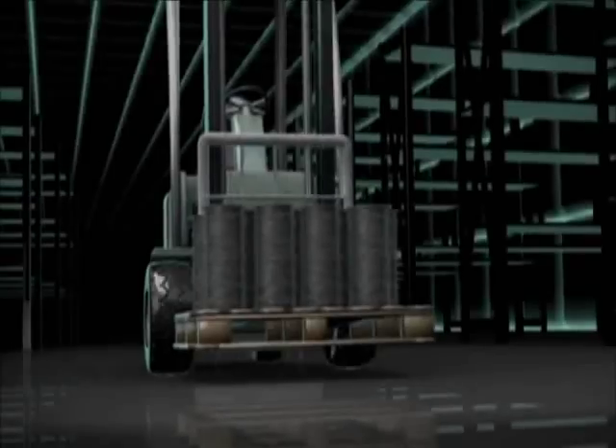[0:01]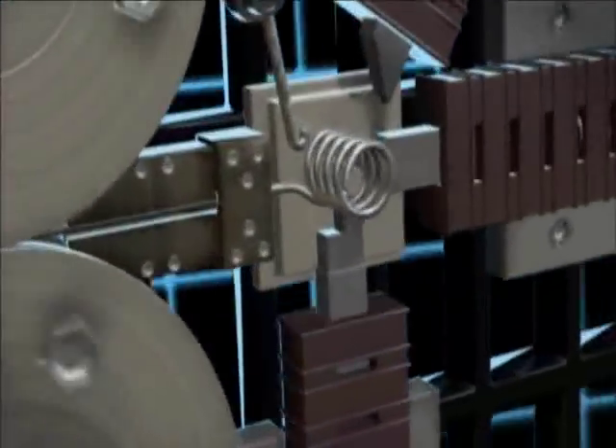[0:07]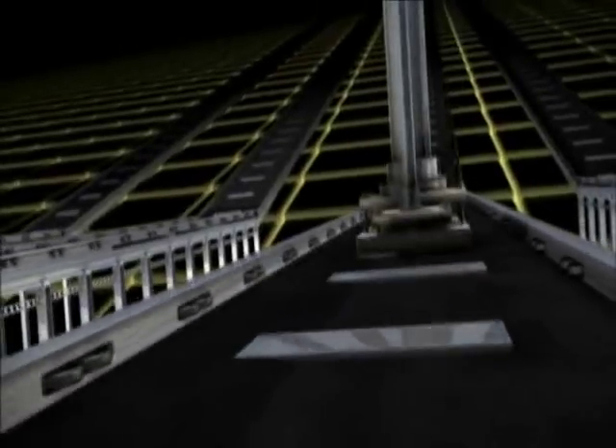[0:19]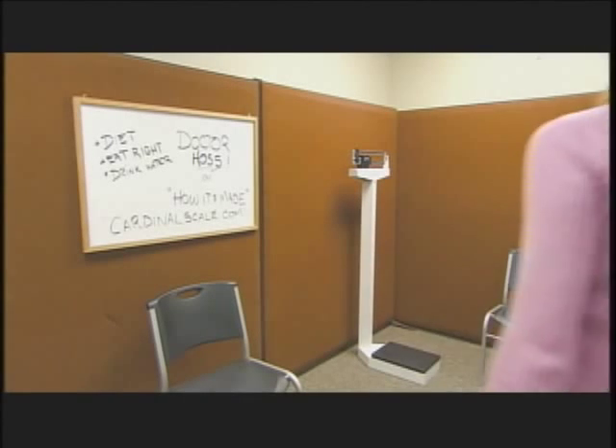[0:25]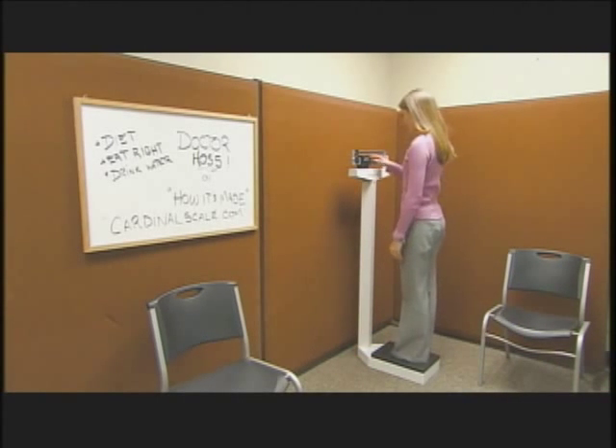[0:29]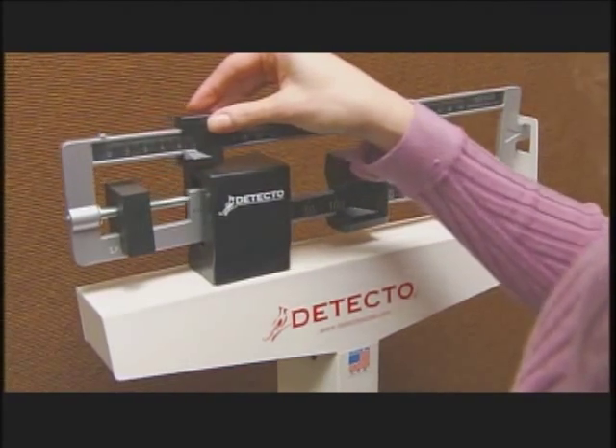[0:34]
This scale compares the weight placed on the platform with a standard weight, known as a poise, that slides along an off-center weighbeam until it balances.
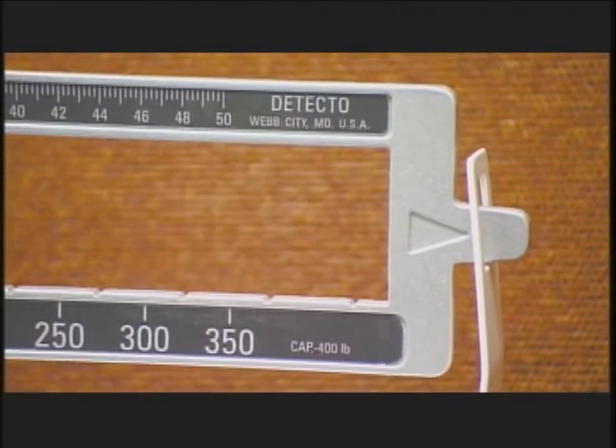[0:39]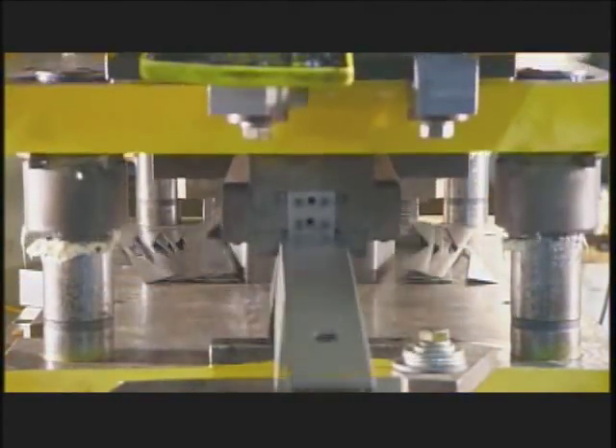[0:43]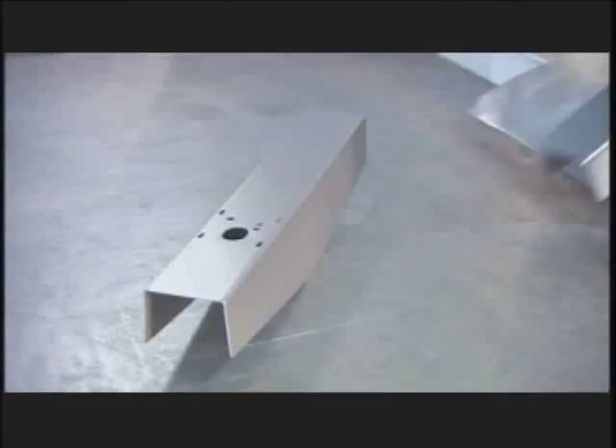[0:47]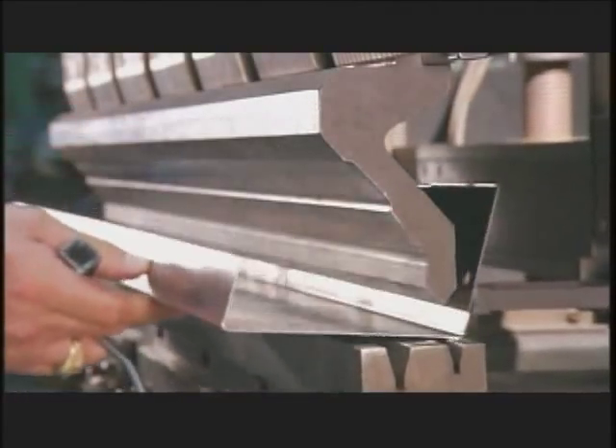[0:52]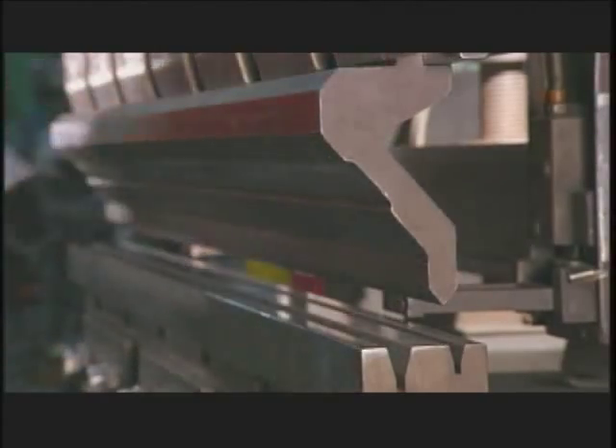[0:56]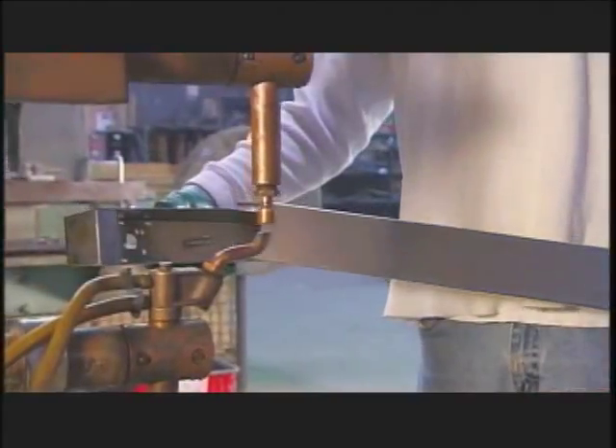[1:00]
A punch press forms sheet steel into the head or top of the scale's column. Workers form the column from another piece of steel using this press brake. Then they spot weld the head and column together.
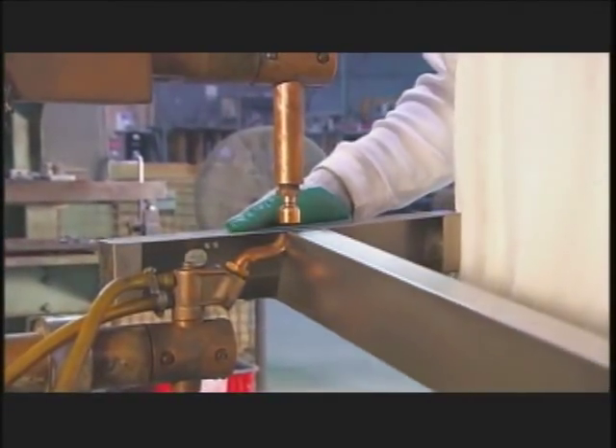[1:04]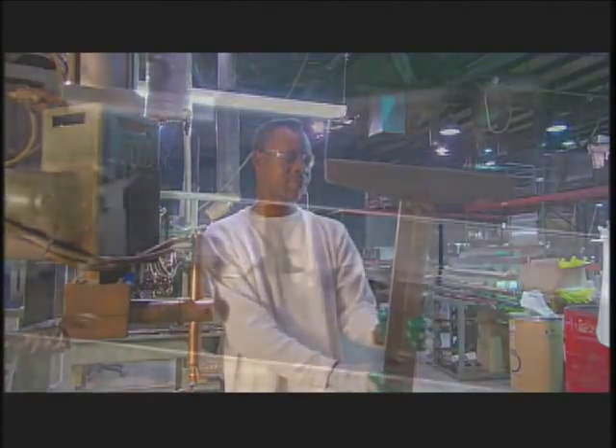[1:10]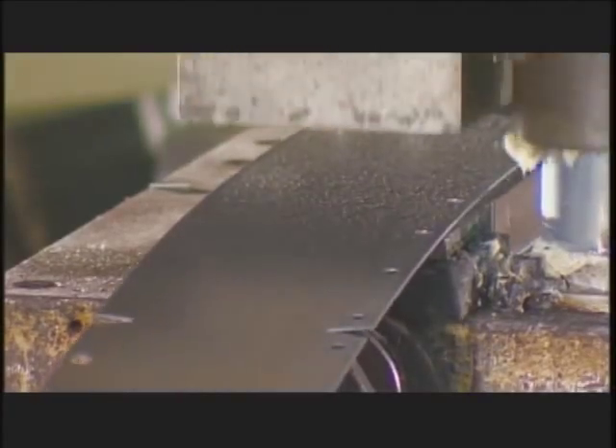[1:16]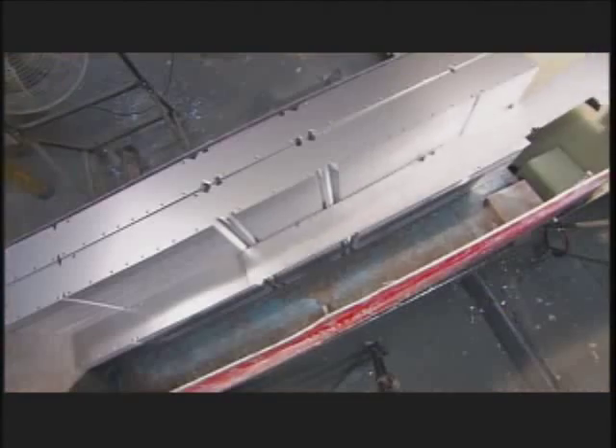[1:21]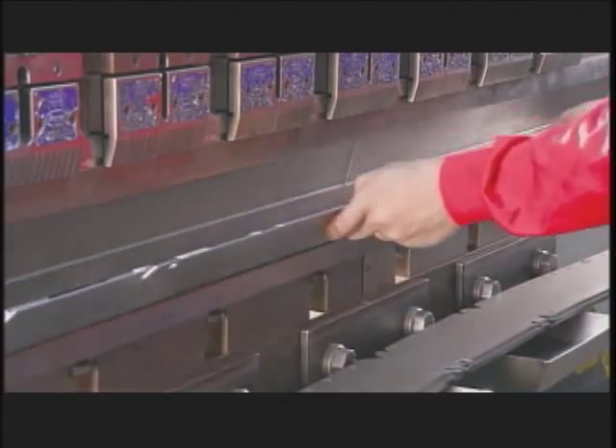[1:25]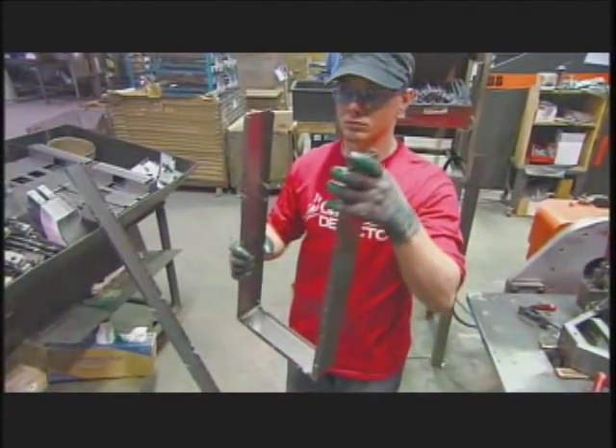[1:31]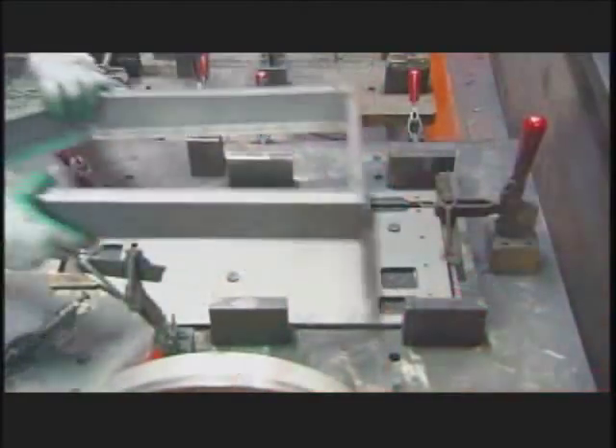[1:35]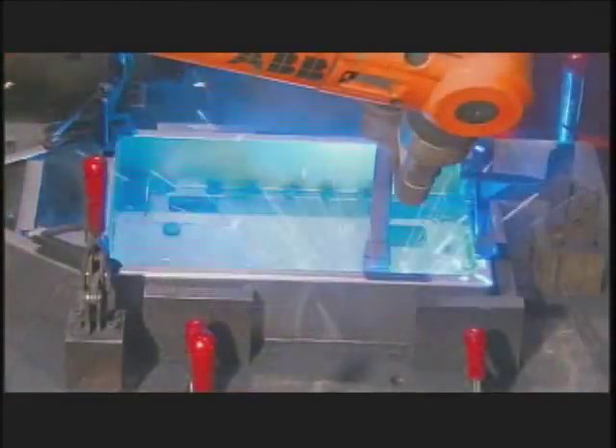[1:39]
Another machine stamps out lengths of steel that will form the frame for the scale's base. Workers use the press brake again to bend both sides of the steel lengths. Then they fold it by hand to form the frame. They clamp the frame onto a base, and this robot welds them together.
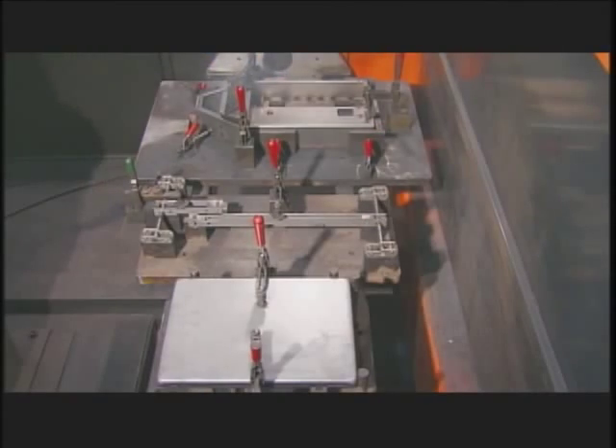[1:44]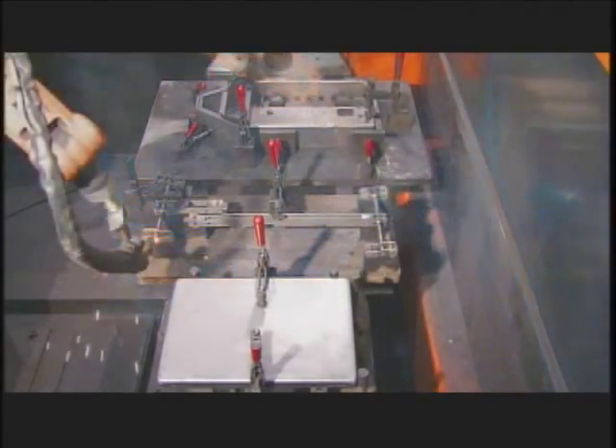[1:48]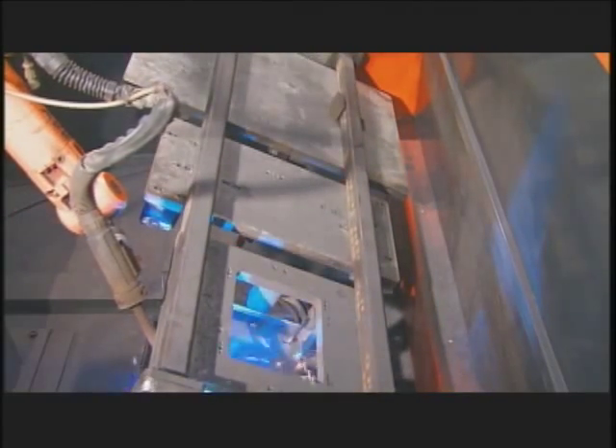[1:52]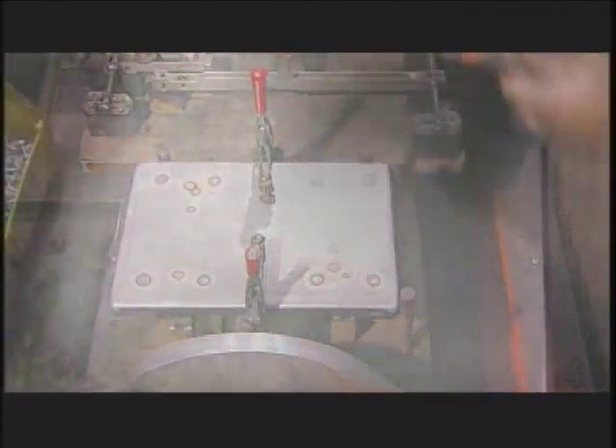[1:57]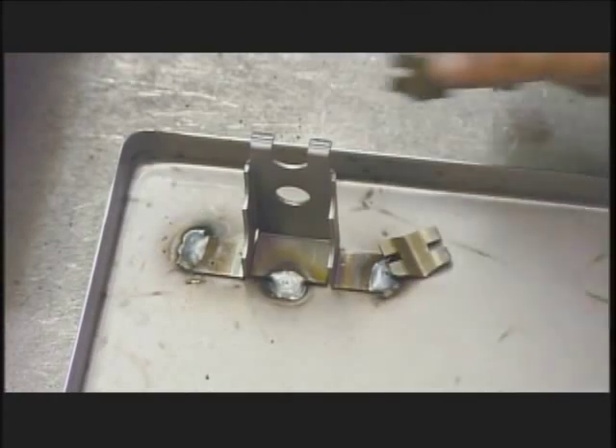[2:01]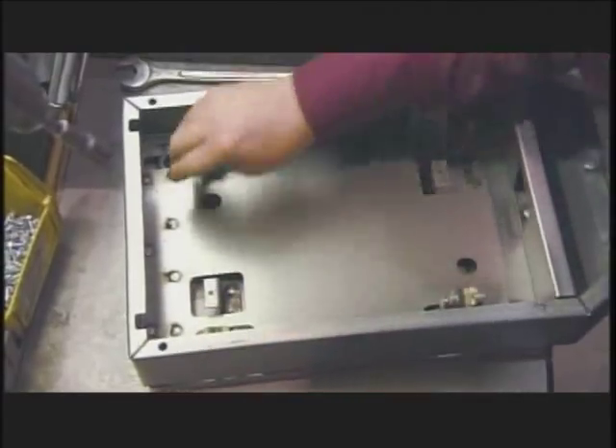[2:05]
The robot moves on to weld other components to the scale, such as the lever mechanism and the base plate. Now workers place steel bearings at each corner of the base where the lever mechanism will rest. Then add the base frame.
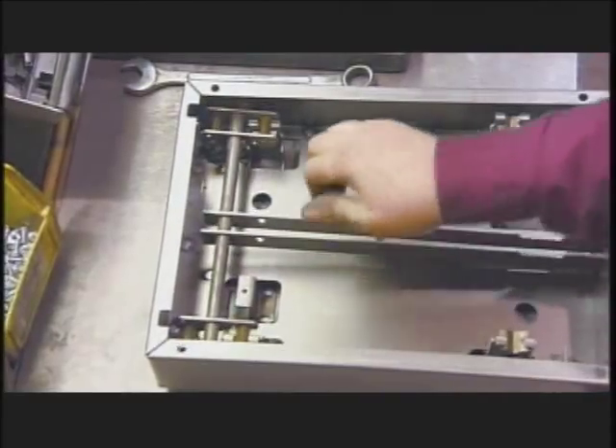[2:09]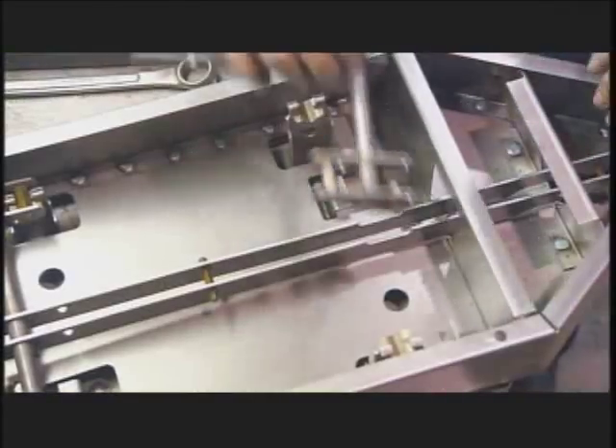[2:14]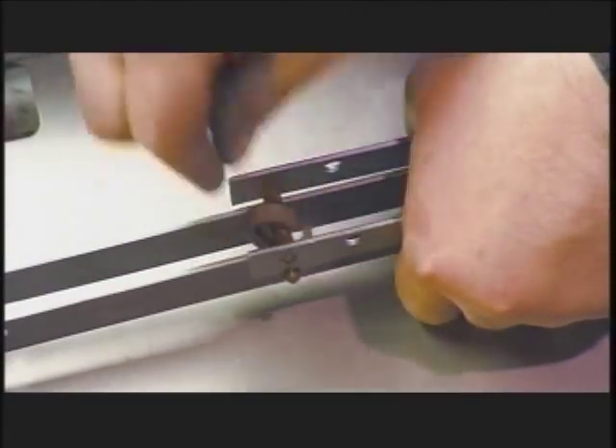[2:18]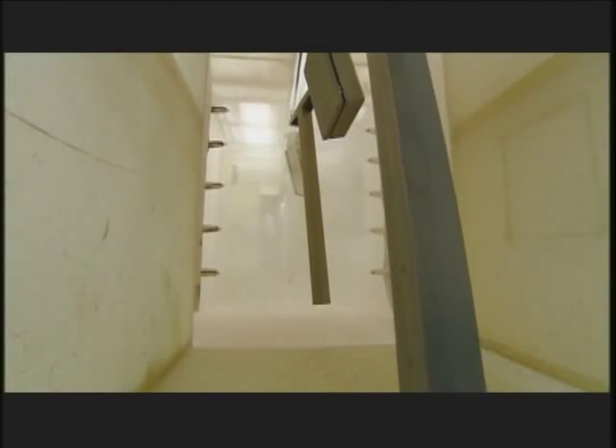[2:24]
Next, they install the long lever, then the short lever. A C-clip joins them together. Once it's right side up, the lever mechanism hangs off the platform.
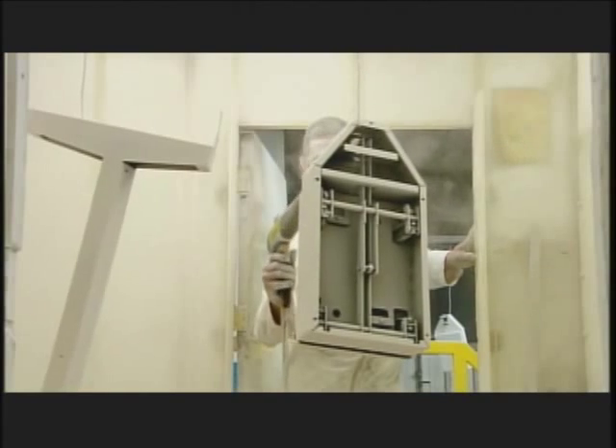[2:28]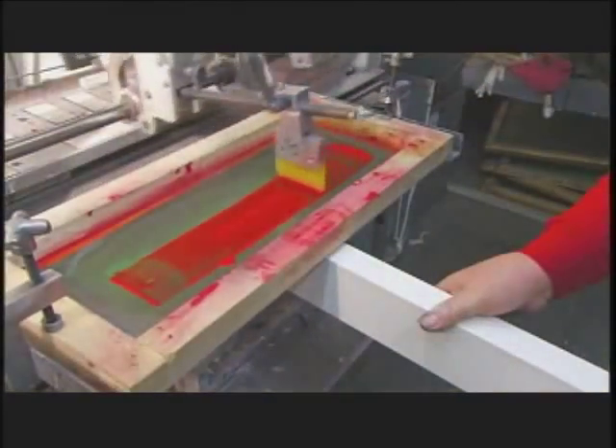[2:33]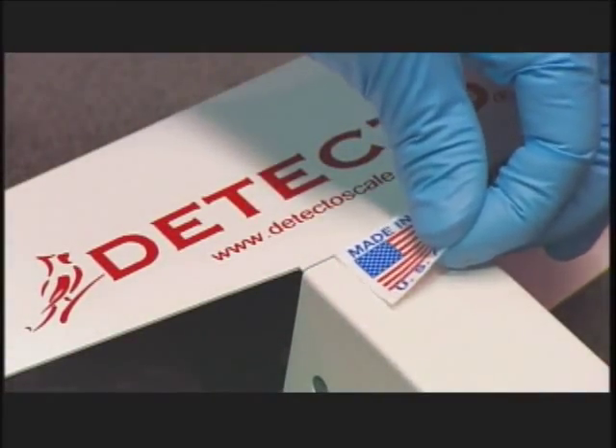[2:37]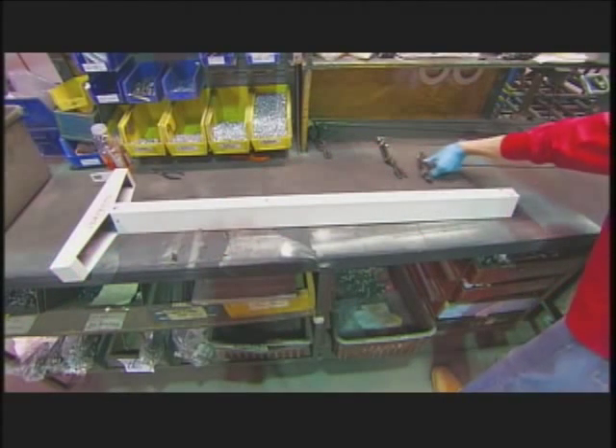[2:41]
The columns receive a coat of electrostatically charged paint that evenly coats the metal for a flawless finish. Once it's dry, a machine silk screens the brand name onto the column. Now for the final assembly.
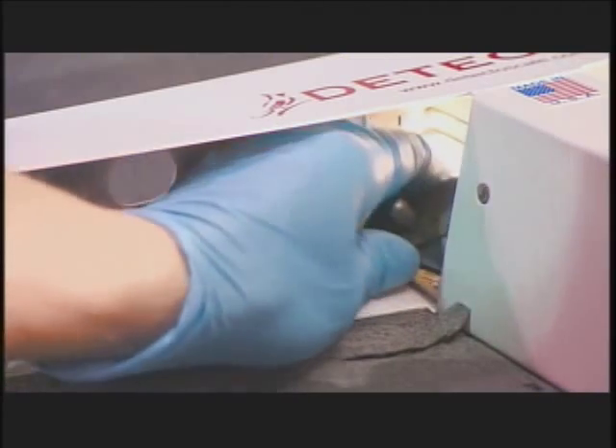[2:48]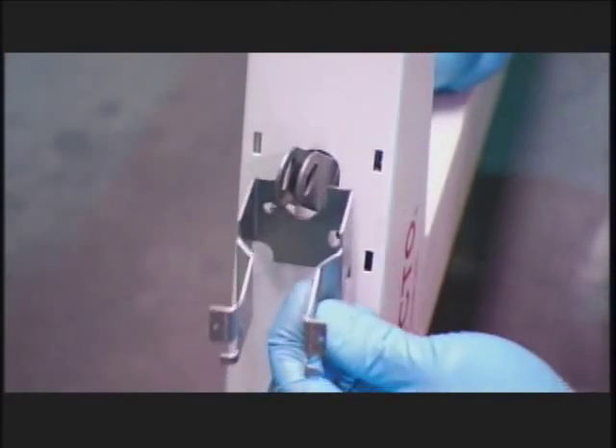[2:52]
A worker inserts a 1.2 meter steel rod that will tie the weighbeam to the levers. He works the rod up through the column. Then at the column's head, he screws it to the weighbeam's shelf.
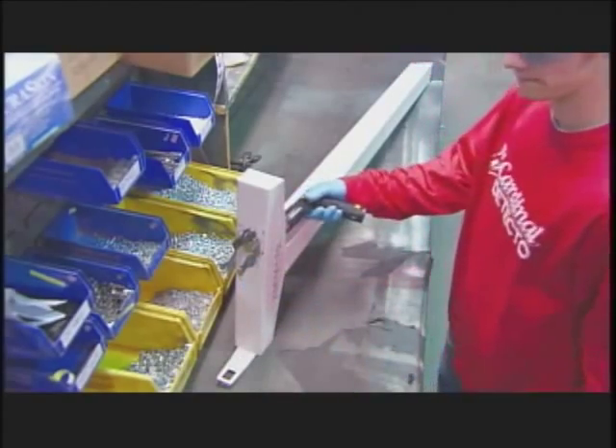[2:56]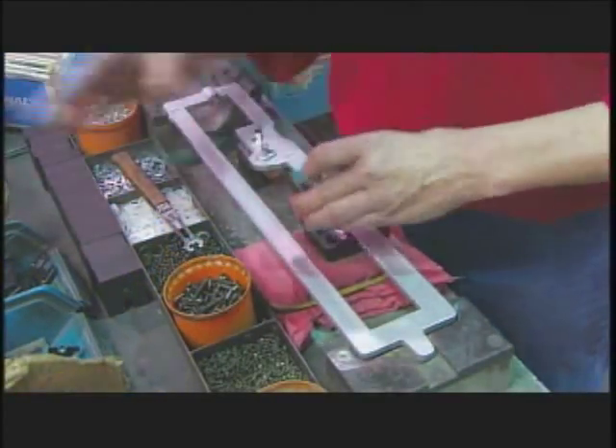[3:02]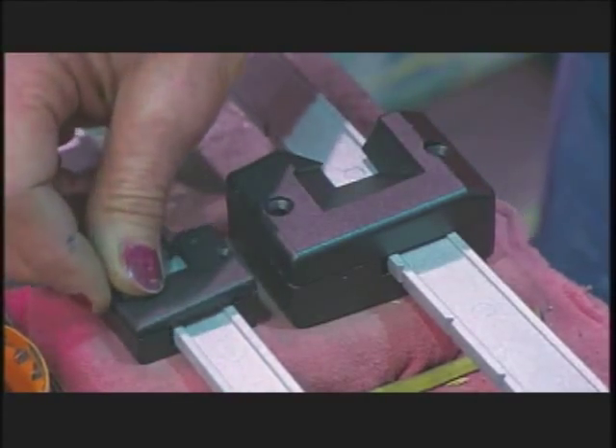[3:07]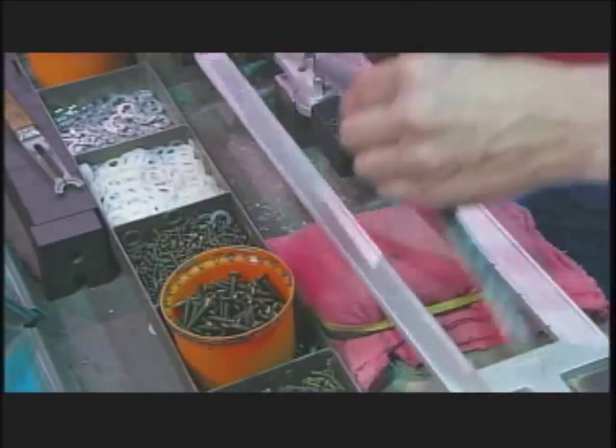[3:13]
Another worker hammers the large poise into position on the weighbeam, then the smaller poise. They screw onto the beam in two parts so they can glide freely. She applies a gauge onto the beam that indicates the weight measured in pounds, from 0 to 350.
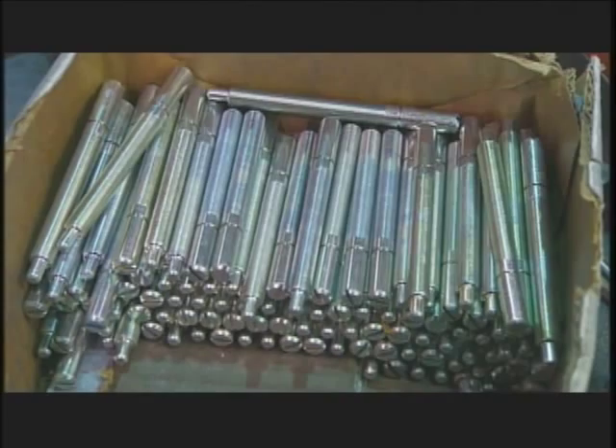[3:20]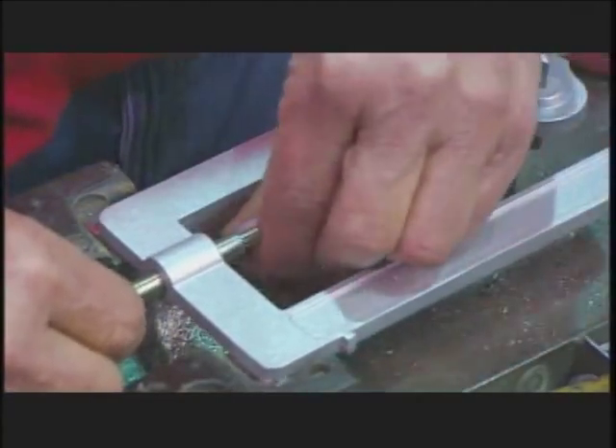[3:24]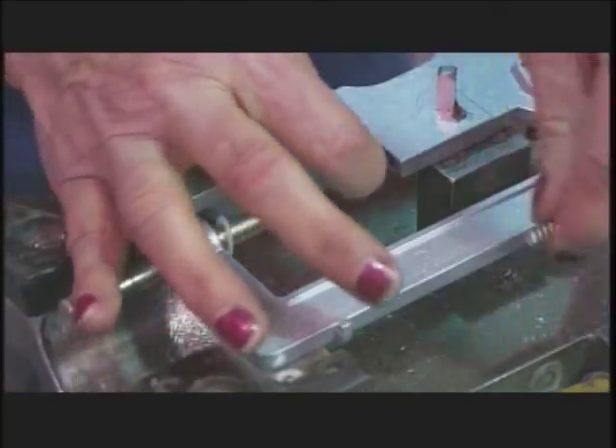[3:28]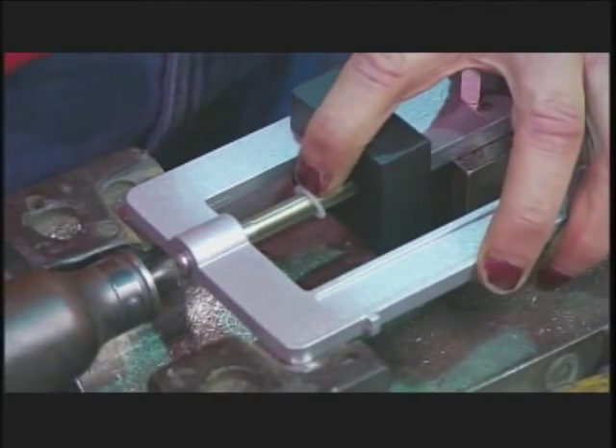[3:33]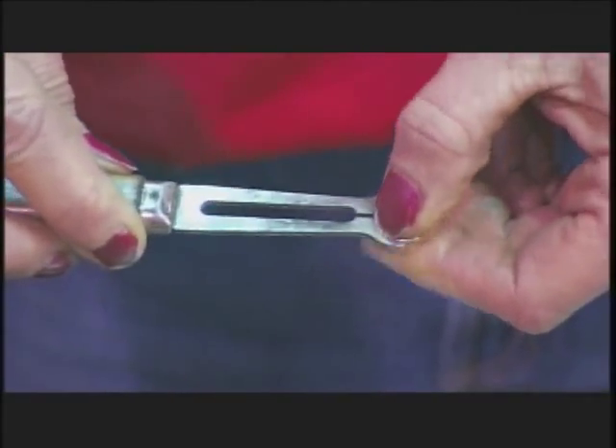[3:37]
Now she takes a zero adjustment screw and spring loads it onto the beam. This allows the beam to balance when the poises are set at zero and the scale is unweighted. A retaining ring holds the screw in place.
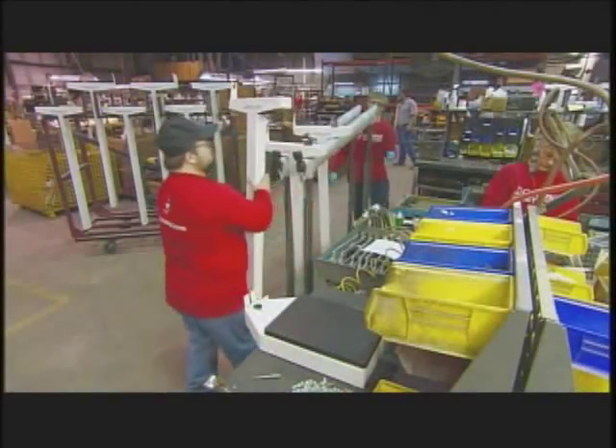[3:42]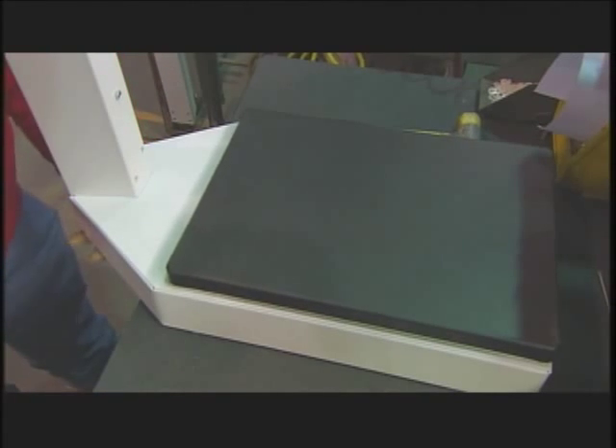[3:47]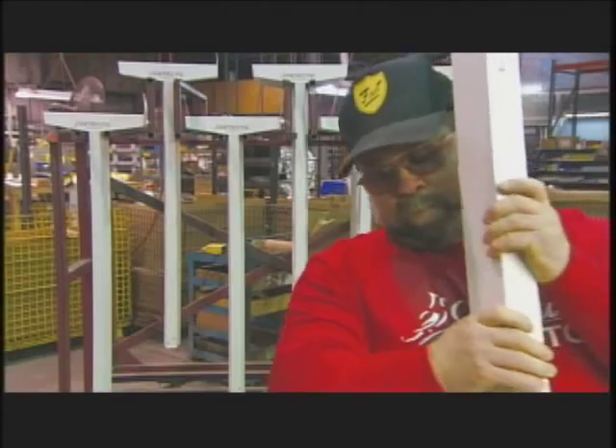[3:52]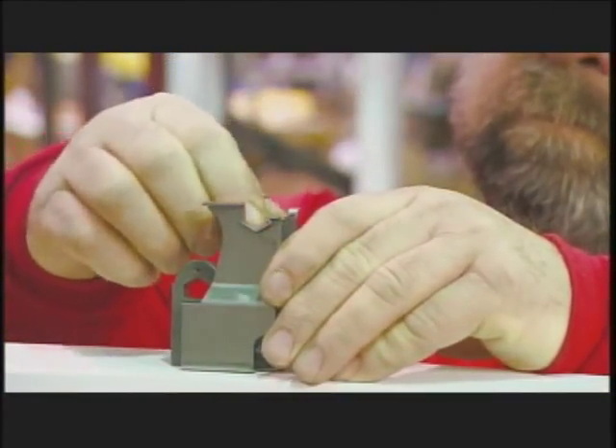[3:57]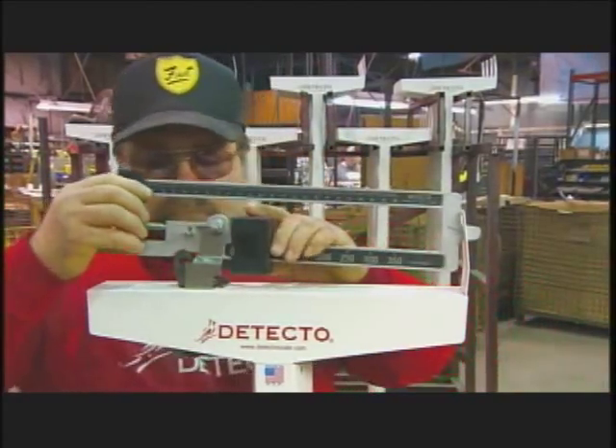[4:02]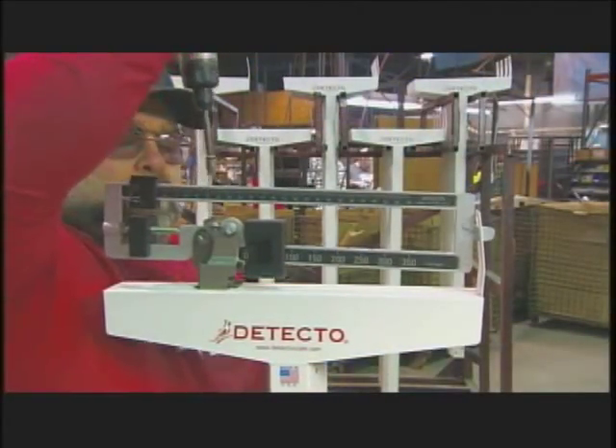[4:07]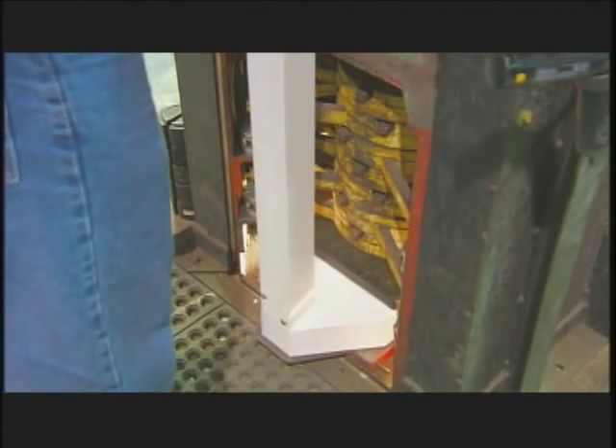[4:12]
At the assembly line, workers fasten the scale's column to its base. They cover the pivot to protect it from wear and set down the weighbeam that balances on it. Then they connect it to the steel rod that comes up through the column from the base. Once the weighbeam connects to the lever mechanism at the base, the scale is functional.
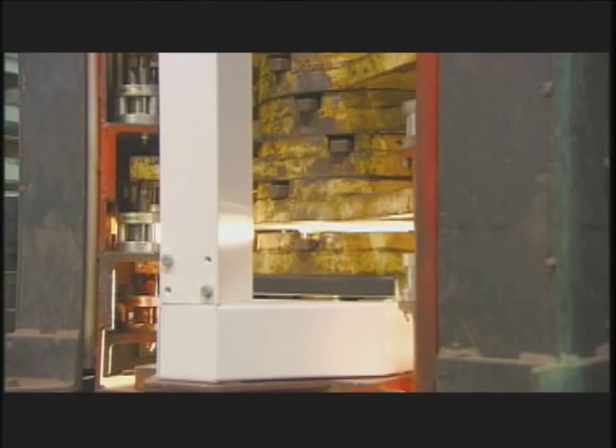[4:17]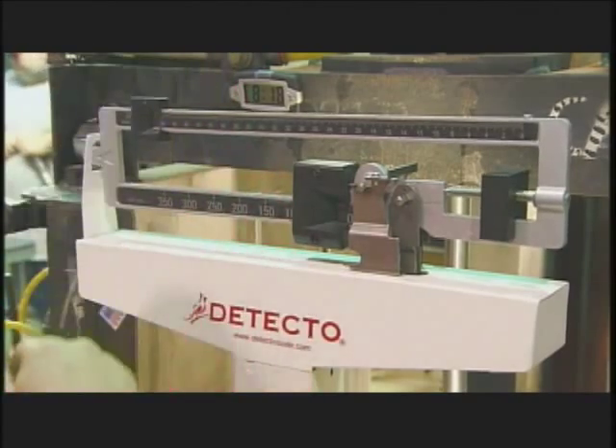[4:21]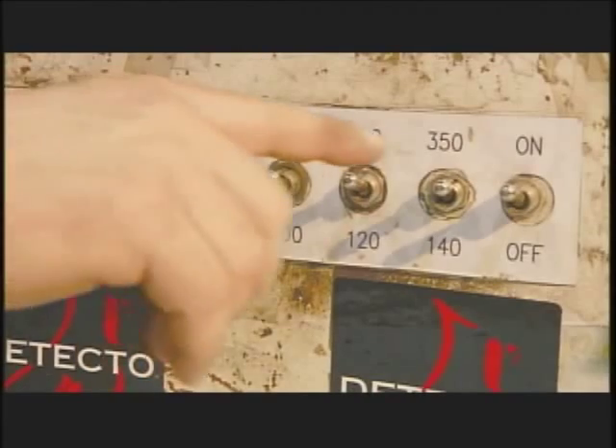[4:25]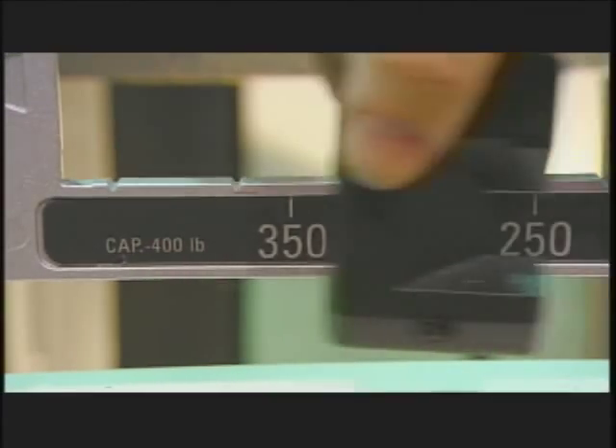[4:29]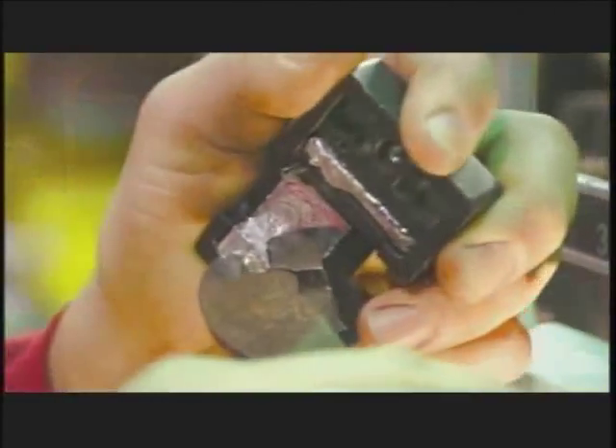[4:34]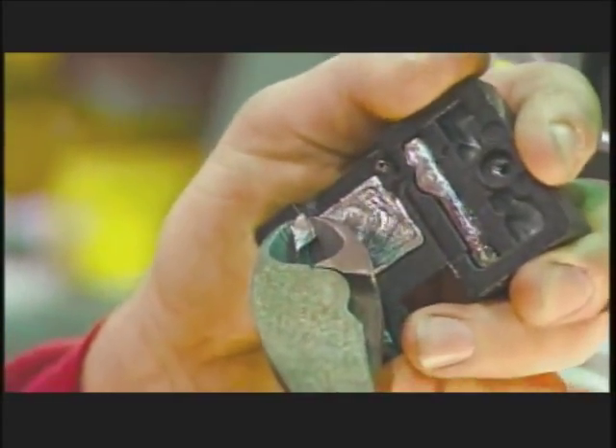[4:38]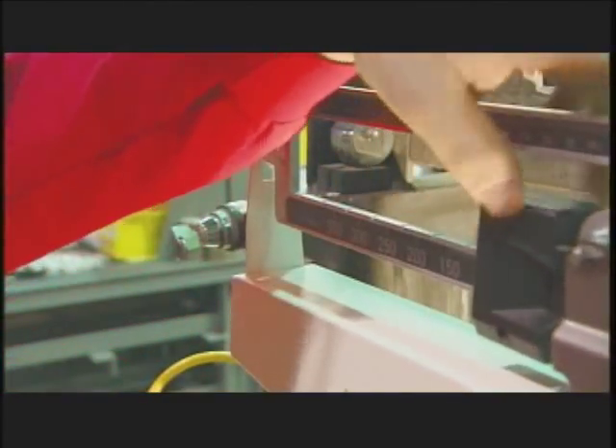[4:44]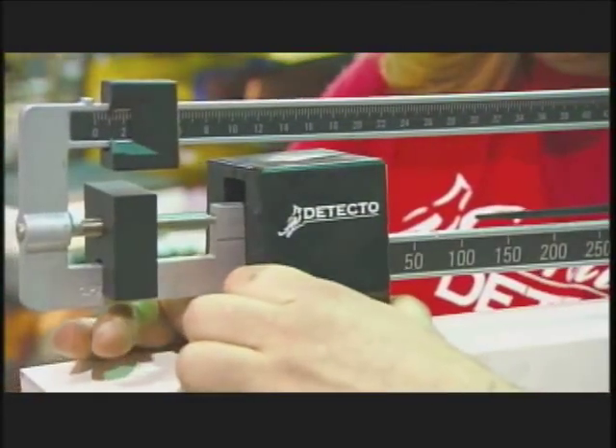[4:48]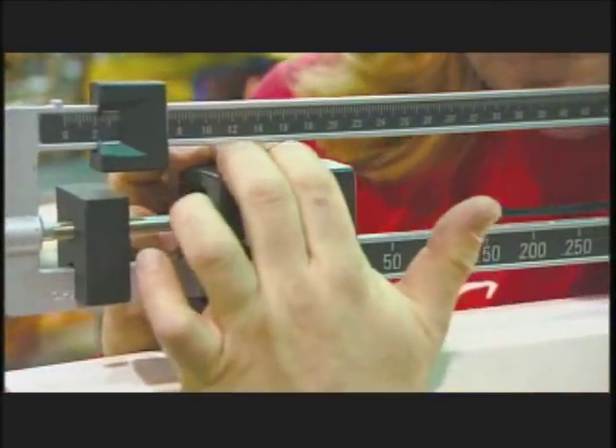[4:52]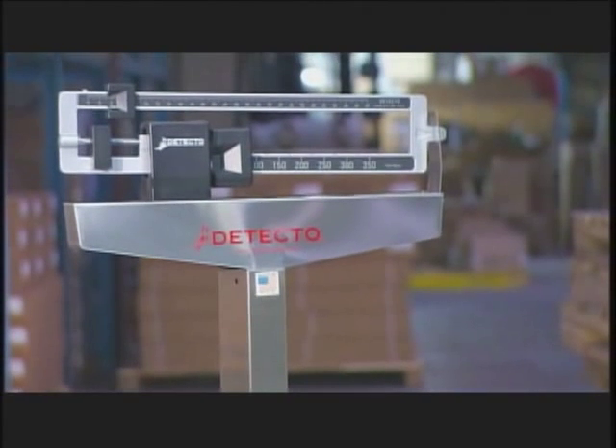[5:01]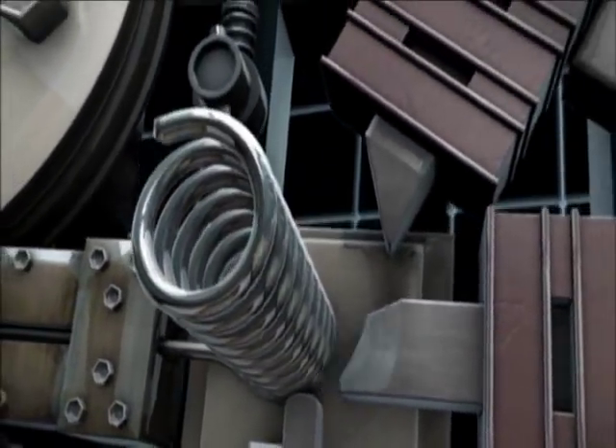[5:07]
Finally, they place a plastic cover over the working parts, and the scale is complete.